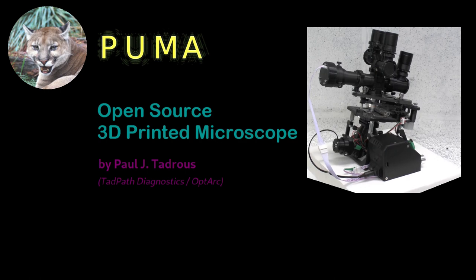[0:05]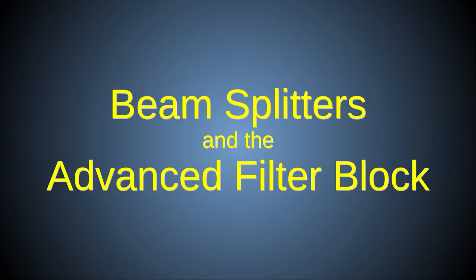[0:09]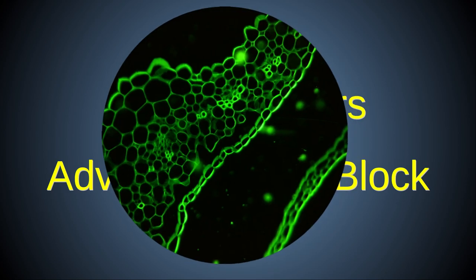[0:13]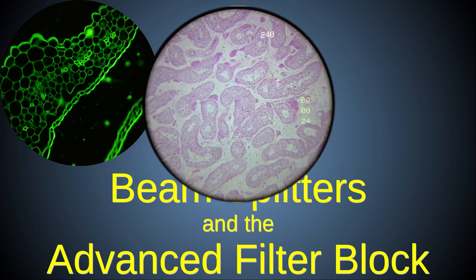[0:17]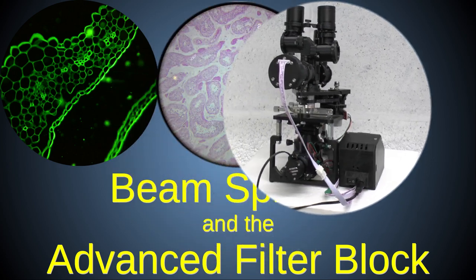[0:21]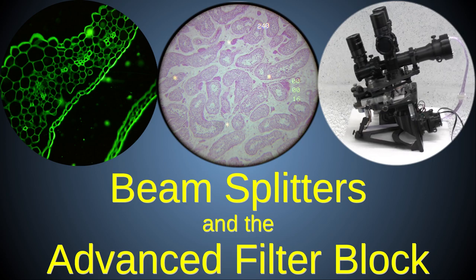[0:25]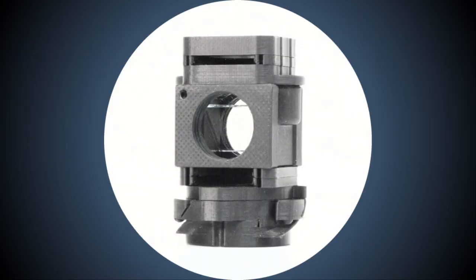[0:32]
Many of PUMA's advanced features, such as coaxial epi-illumination, augmented reality projection, and binocular and trinocular viewing, depend on optical beam splitters in the advanced filter block and binocular head modules. In this video, I'll discuss the beam splitter components of both those modules and show how to make the advanced filter block. A full discussion of the binocular head module will be the subject of a separate video.
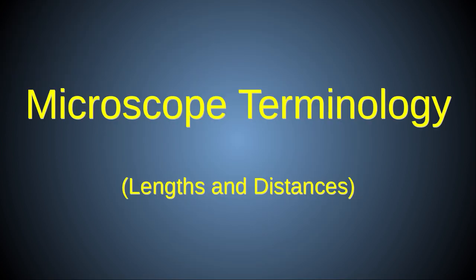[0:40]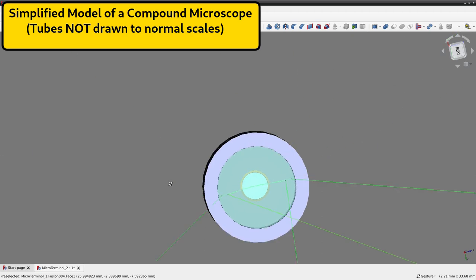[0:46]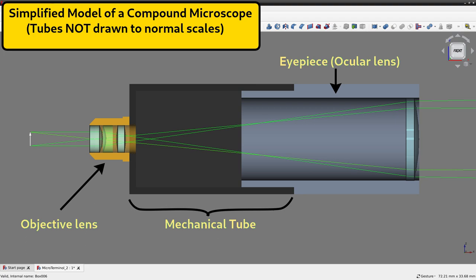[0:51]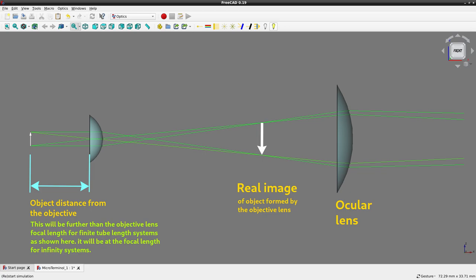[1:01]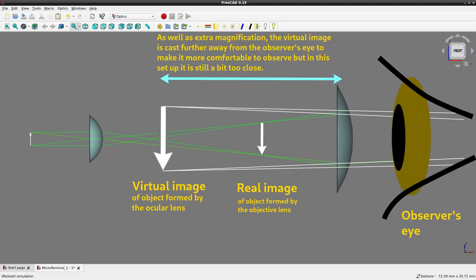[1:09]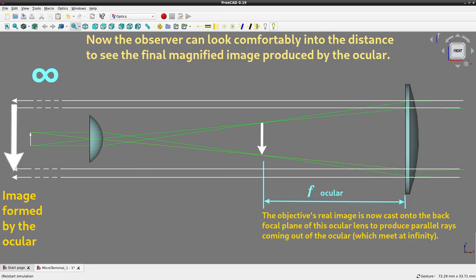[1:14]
First, I'll give you some context so you can understand how the PUMA filter blocks and ocular heads fit into the overall scheme of the microscope. A generic compound microscope takes a real image of a specimen, which is a certain distance close to an objective lens, and magnifies that image further with an ocular lens. By arranging it so that the real image from the objective falls onto the back focal plane of the ocular, you get a situation where you can look comfortably into the far distance through the ocular lens to see the magnified image of the specimen.
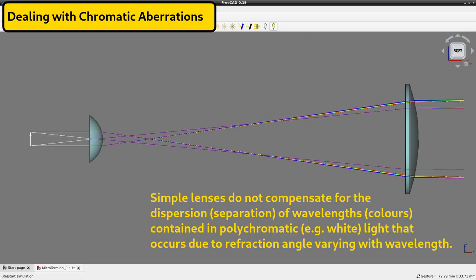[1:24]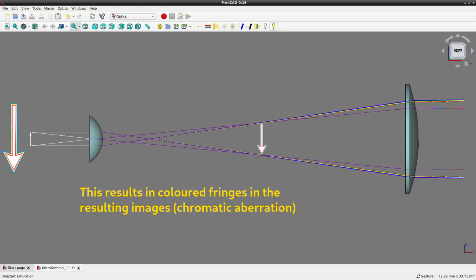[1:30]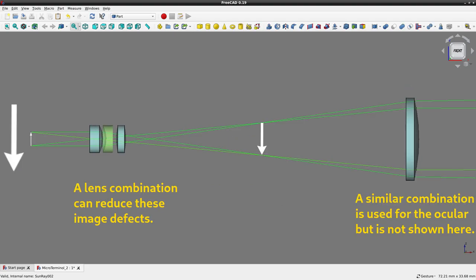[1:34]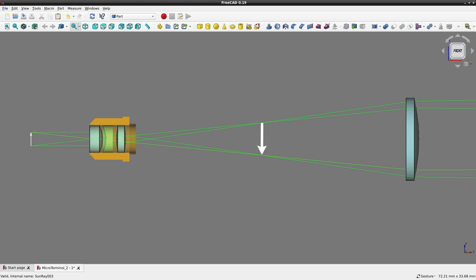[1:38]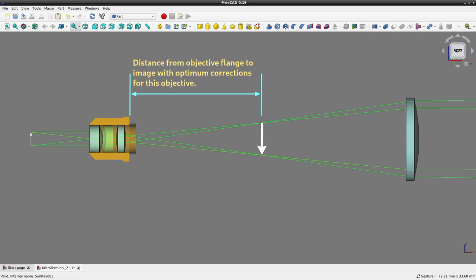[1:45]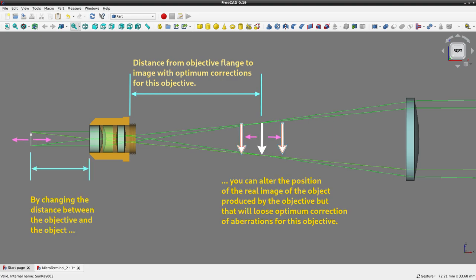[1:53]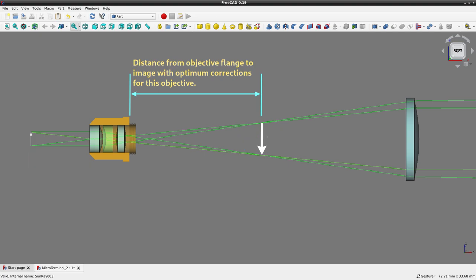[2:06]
Using a simple lens as objective results in chromatic and spherical aberrations of the image, so microscope objectives use lens combinations to reduce these aberrations to a minimum. However, these corrective effects only take place optimally when you focus the image at a certain distance away from the objective. You could focus the image further away or closer than this optimum distance by simply moving the specimen closer to or further from the objective, but then the image would lose those optimum aberration corrections. So, it is important that the image from each objective is focused only at the optimum distance it was designed for.
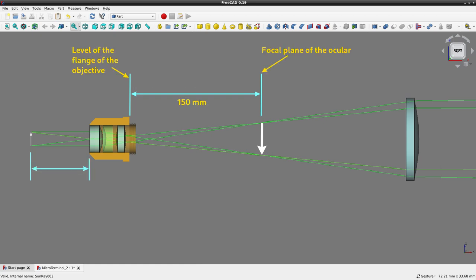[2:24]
Over the years, microscope manufacturers settled on certain standards for this optimum distance, and the most commonly used standard, until the uptake of infinity optics, which I'll discuss shortly, was 150 millimeters from the flange of the objective to the focal plane of the ocular. A notable exception to this were objectives made by Leitz, which were designed to give optimal corrections when the image is focused at 160 millimeters from the flange of the objective. This optimum distance is sometimes called the optical tube length.
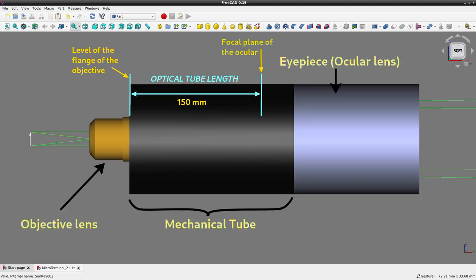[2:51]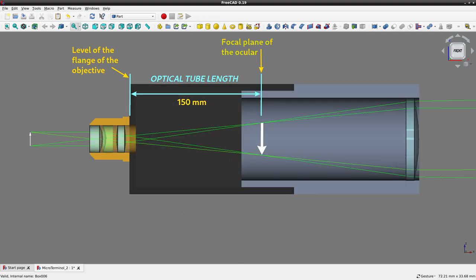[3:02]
The objective is rigidly held at this optimum distance from the eyepiece by the mechanical tube of the microscope, and for practical reasons, the length of this tube is measured from the flange of the objective to the flange of the ocular. This length of physical tubing is called the mechanical tube length of the microscope. Another standard adopted by microscope manufacturers is that there shall be exactly 10 millimeters from the flange of the ocular to the focal plane of the ocular inside the mechanical tube. Thus, the mechanical tube length is exactly 10 millimeters longer than the optical tube length.
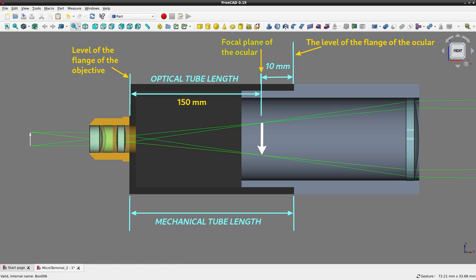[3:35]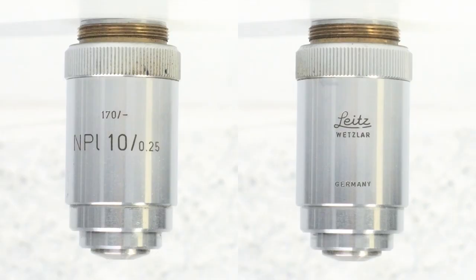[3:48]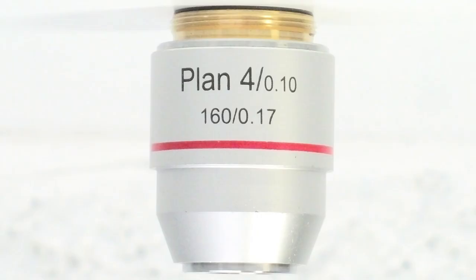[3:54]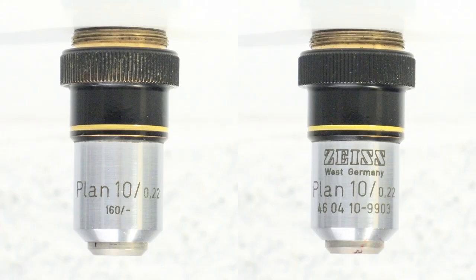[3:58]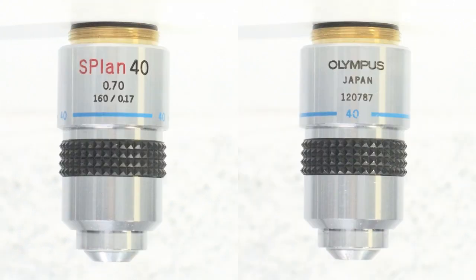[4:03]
This means that most non-infinity objectives should be used with a mechanical tube length of 160 millimeters, and this is the Royal Microscopical Society, or RMS, standard, although Leitz continued to use 170mm tubes for their objectives long after the RMS standard was adopted by other manufacturers. The mechanical tube length appropriate for any objective is printed on the barrel of the objective, as is shown here.
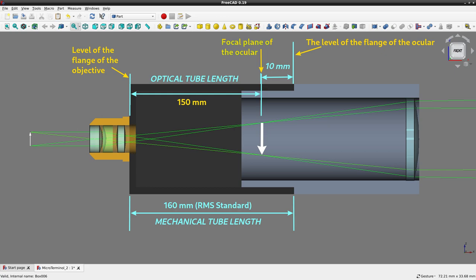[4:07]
Another standardized feature, which is not the same standard for all microscopes, is the parfocal distance, which is related to the conjugate focal distance of the objective. The conjugate focal distance is the distance between the focal plane of the specimen and the focal plane of the image of the specimen produced by the objective. To keep objectives parfocal, they are designed such that the distance from the flange of the objective to the specimen in focus is constant regardless of the magnification of the objective. For PUMA and many other professional microscopes, this distance is 45 millimeters.
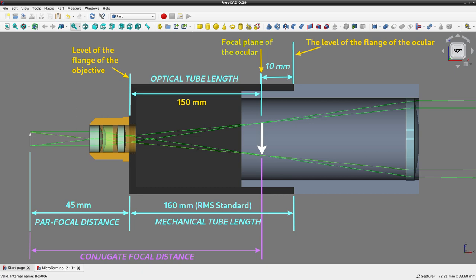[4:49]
So, when you add this 45mm to the 150mm from the objective flange to the focused image, you get a total of 195mm. So when you see objectives being described as 195 objectives, this is what it means. Some other objectives have a parfocal distance of 35 mm, so these are described as 185 objectives. These will not work with PUMA because there is not enough travel distance in the stage to move the specimen the extra 10 mm closer to the objective that will be required to get it in focus. One other distance term worth noting is the working distance of the objective, defined as the distance from the front lens element of the objective to the closest surface of the coverslip when the specimen is in focus.
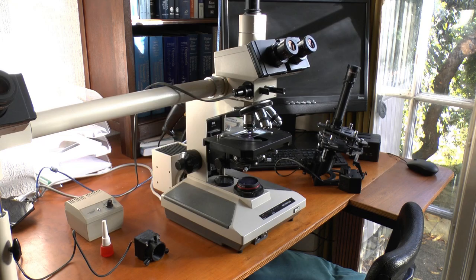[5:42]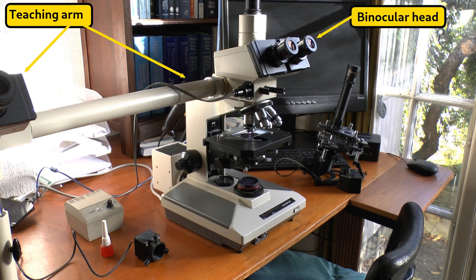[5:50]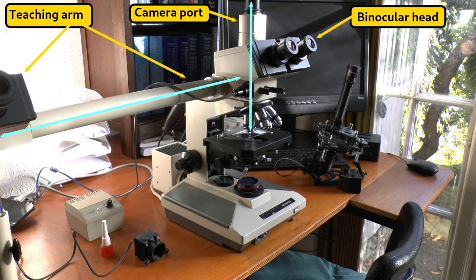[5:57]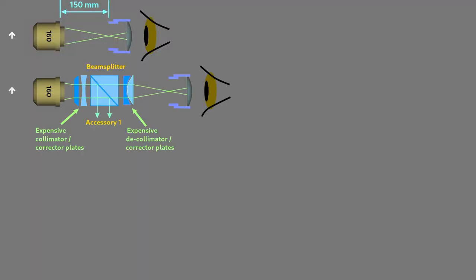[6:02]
As microscopes got more complex, they required additional accessories such as binocular heads, teaching arms, camera ports, epi-illumination prisms, etc. This made it necessary to extend the microscope tube length. So, expensive collimating and decollimating optics were needed for each accessory to lengthen the amount of optical path available before the image is brought to a focus. Collimation is also required to minimize the aberrations and ghost images introduced by the flat surfaces of prisms.
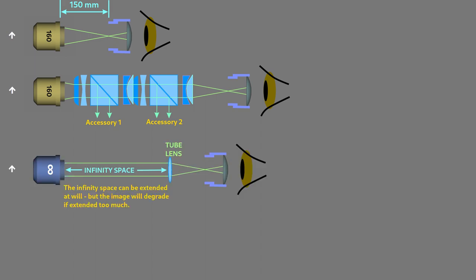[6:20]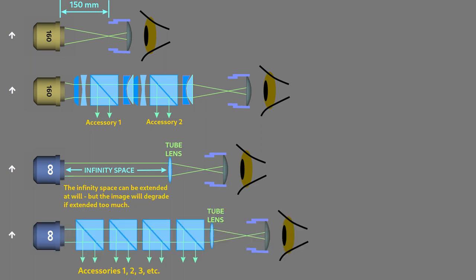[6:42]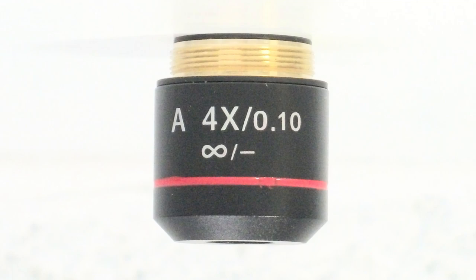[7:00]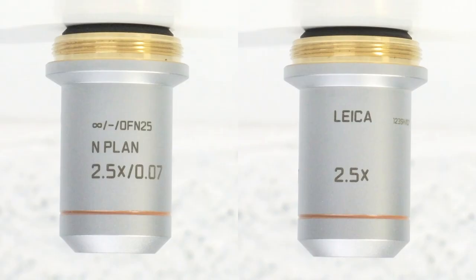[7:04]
Infinity-corrected objectives were developed to avoid these problems. With these objectives, with the specimen at the correct working distance from the objective, the image beam exiting the back of the objective is already collimated as a parallel beam, so it comes to a focus at infinity. This allows you to use any number of beam splitters in the parallel beam path for various accessories without needing a pair of collimating and decollimating lenses for each one. Only one final converging tube lens is required to focus the final image on the focal plane of the oculars. So, in these systems, the mechanical tube length is marked as infinity on the barrel of the objective.
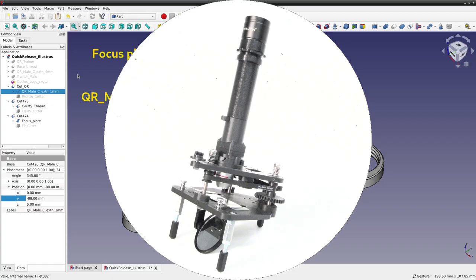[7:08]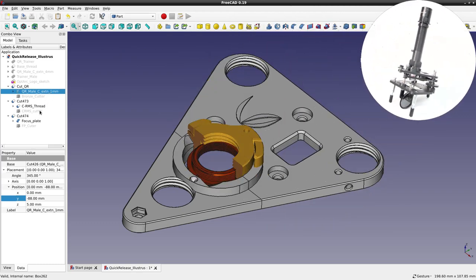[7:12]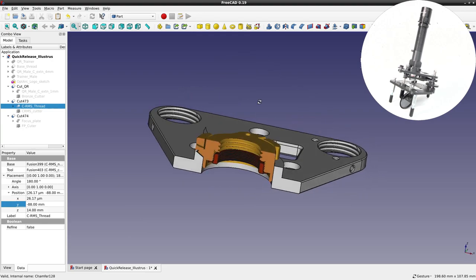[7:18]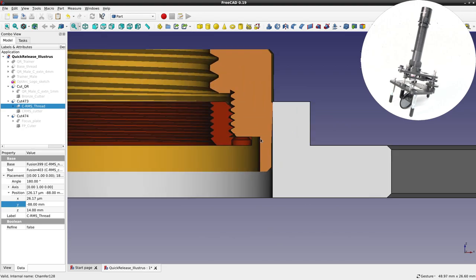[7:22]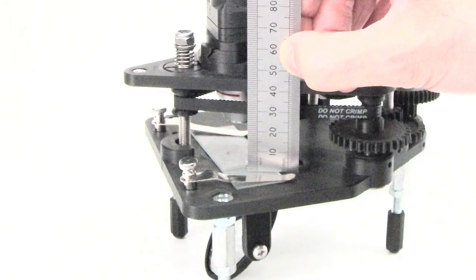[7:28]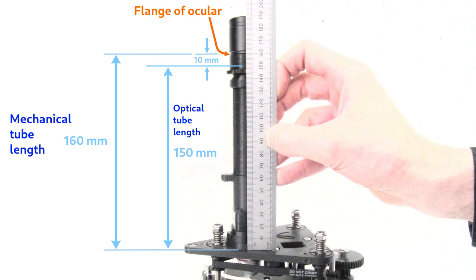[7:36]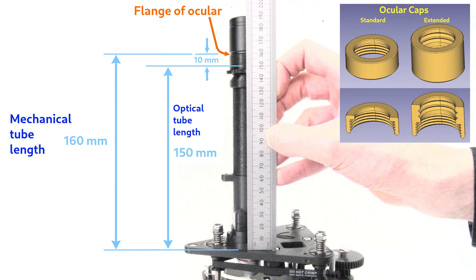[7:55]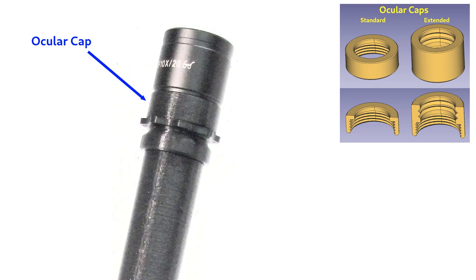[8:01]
This PUMA foundation scope illustrates how PUMA implements the various distances we have been discussing. With the standard 1 mm quick-release objective holder, the level of the flange of the objective is the top surface of the focus plate. So you can see that from here to the specimen is 45 mm of parfocal distance, and from here to 10 mm below the ocular flange is the 150 mm of optical tube length for the objective. The extra 10 mm to the ocular flange completing the 160 mm of RMS standard mechanical tube length. PUMA also has a 10 mm extra elongated ocular holder as an alternative to the standard ocular holder, which you can use if you are using Leitz objectives which need a 170 mm mechanical tube length.
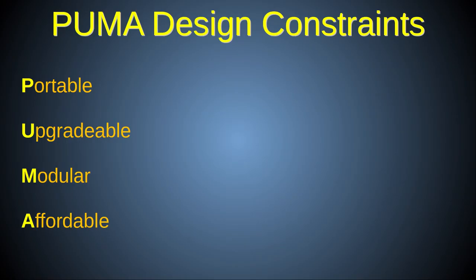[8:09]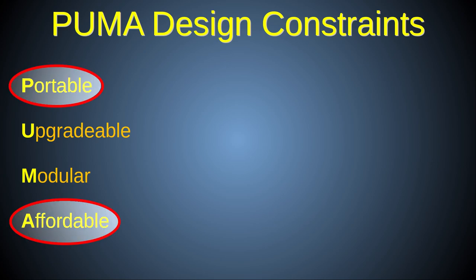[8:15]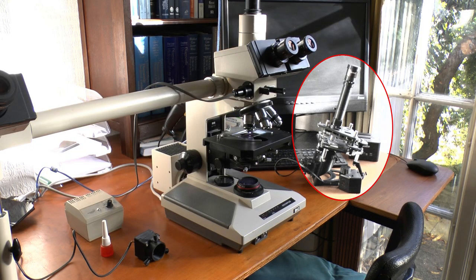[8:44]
Two important design constraints of PUMA are portability and affordability. These prohibit the use of collimating and decollimating lenses due to the fact that they would greatly increase the cost of production, be difficult for ordinary people to source, and would increase the size and weight of the scope. For these reasons, all of PUMA's advanced features, including the binocular head, were designed to fit into the literal 160 mm of focusing space behind the objective, to result in a very compact, economic and lightweight scope designed to use RMS standards.
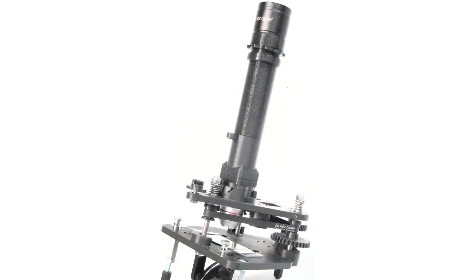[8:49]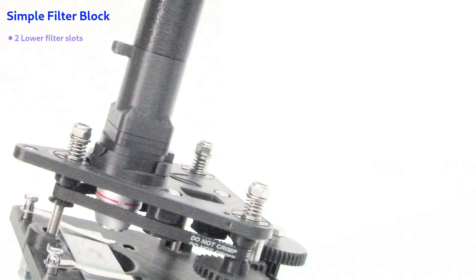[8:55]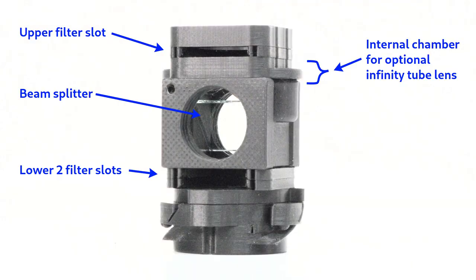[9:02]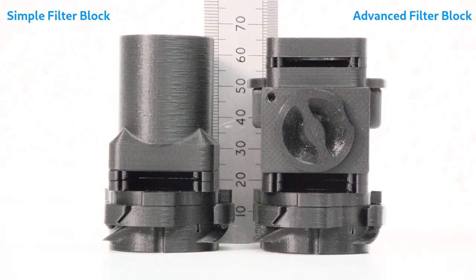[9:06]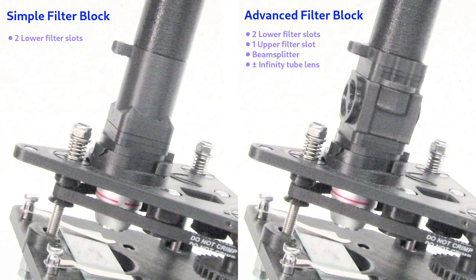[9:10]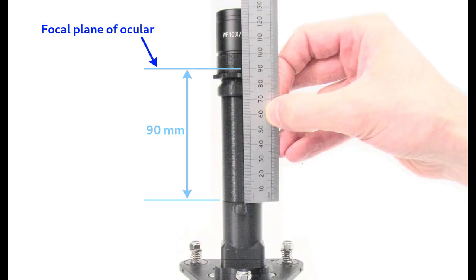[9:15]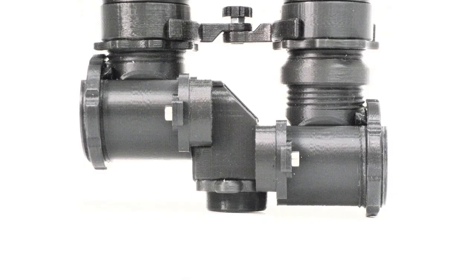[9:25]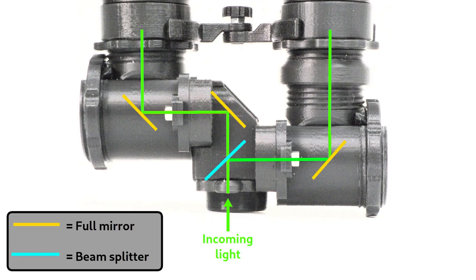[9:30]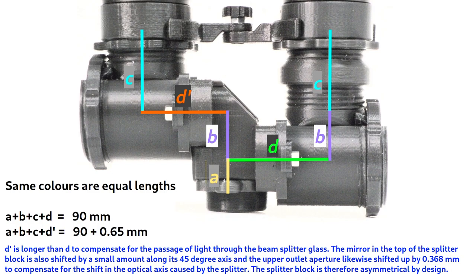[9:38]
Above the objective holder is the filter block, which may be simple with no internal optics, or advanced with an internal beam splitter and an optional tube lens for use with infinity-corrected objectives. Note that they are exactly the same height as each other, so are interchangeable depending on your needs. Above the filter block is the final 90 mm of objective focusing space. This 90 mm may be used by a straight optical path for the monocular head module you see here. Alternatively, the same 90 mm may be folded by a beam splitter and three mirrors into the adjustable binocular head shown here. This results in an even more compact scope. However, the use of beam splitters without collimation corrector lenses brings with it several compromises in optical quality, which will be introduced in the next section.
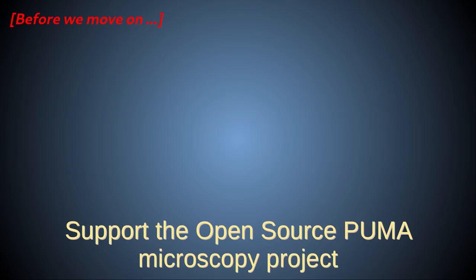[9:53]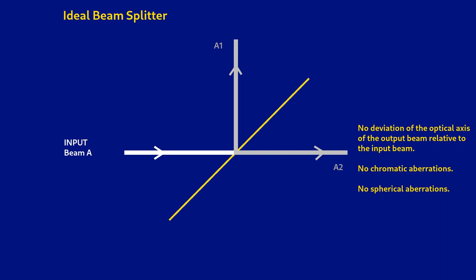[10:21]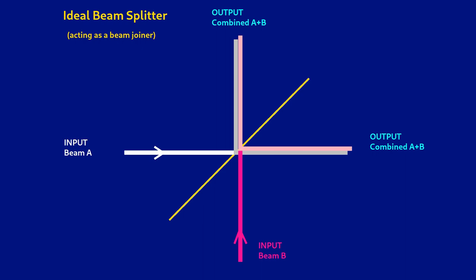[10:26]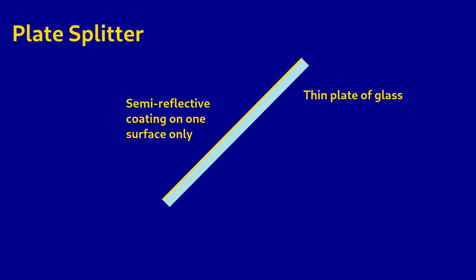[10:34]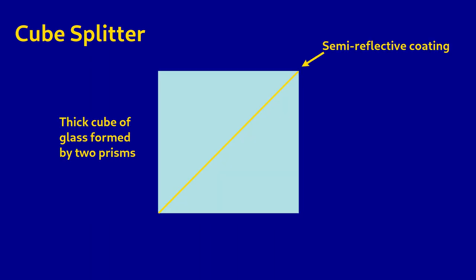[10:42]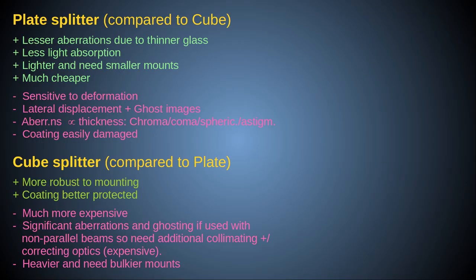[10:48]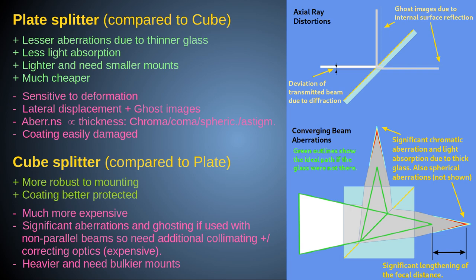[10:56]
There are several types of optical beam splitter, and each type can also be used as a beam joiner. The two types that were considered for use in PUMA are the splitter plate and the splitter prism cube. The beam splitter plate is a thin plate of glass coated with a semi-reflective coating on one side. A beam splitter cube is made of two prisms that sandwich a coating in between them. It is important to appreciate that there is no single best type of splitter for all applications. Each has its own advantages and limitations, as shown in this summary.
I decided to use the thin plate beam splitters for PUMA because they better satisfy the PUMA design constraints of affordability, being many times cheaper than the cubes, and portability, because they take much less space to mount and are lighter.
Also, PUMA uses converging rather than collimated imaging beams, and so would require expensive additional correction optics and longer tube lengths if cube splitters were used. This would greatly increase both expense and bulk. This does mean, on the other hand, that PUMA design and construction methods had to be carefully tailored to minimize the unwanted effects of the plate splitters.
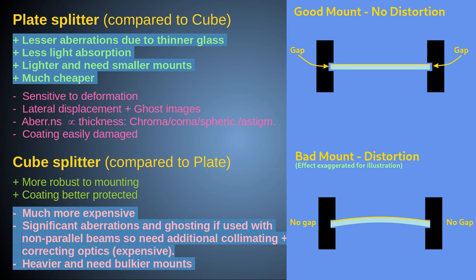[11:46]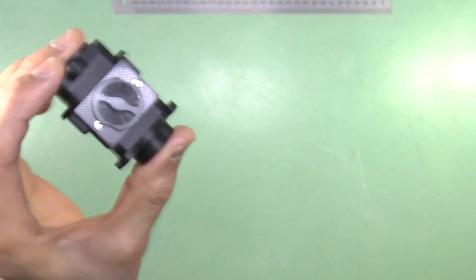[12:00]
For example, careful design of the mounts was needed to avoid putting pressure on the splitter plates, to avoid deformation of the glass, resulting in astigmatic aberrations. Listen to this. That is a good sound. It means that the splitter plate is free to rattle, and so no lateral pressure is being put on it. I'll discuss these important construction details later in the video.
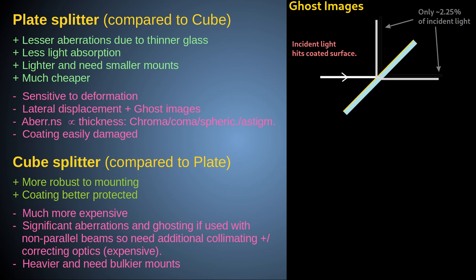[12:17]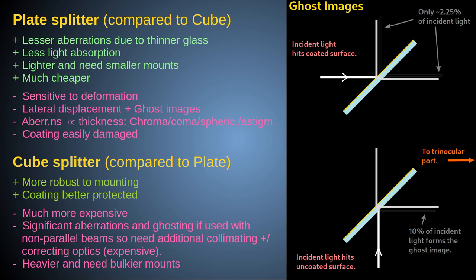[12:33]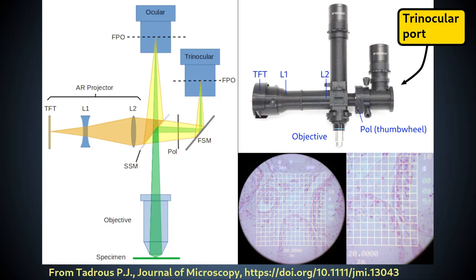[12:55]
The ghost image reflection of the plate splitters used in PUMA is very faint and is not noticeable in most normal bright field viewing conditions, but may sometimes be seen in some dark field settings, especially on the trinocular port, because that takes its image reflection after first hitting the plain glass surface of the beam splitter before reaching the coated semi-reflective surface. Again, PUMA's careful design and construction techniques were deliberately chosen to minimize this, and so it's important to follow the PUMA build instructions carefully to get the best quality image results. For example, the trinocular port is designed to only be used with a rotatable polarizer, which can help filter out some of the ghost image component.
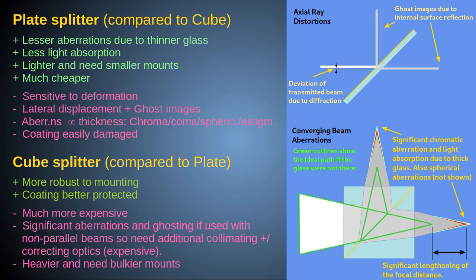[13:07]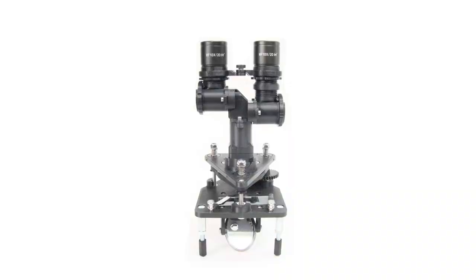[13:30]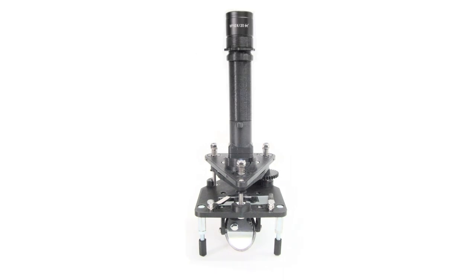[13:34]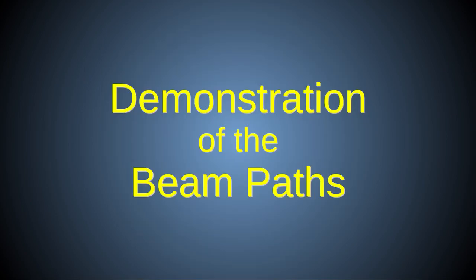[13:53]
Unfortunately, no affordable or practical optical correction has been found for PUMA to ameliorate the chromatic and spherical aberrations caused by light passing through the beam splitters. Although these effects are small for the thin plate splitters used in PUMA, they are noticeable, so it is always best practice to use the minimum number of beam splitters required for your application. For example, if you don't really need the binocular head, then don't use it. If you do need the extra filter slot provided by the advanced filter block, but have no intention of using the augmented reality heads-up display or epi-illumination or trinocular features, then don't add the beam splitter when constructing the advanced filter block.
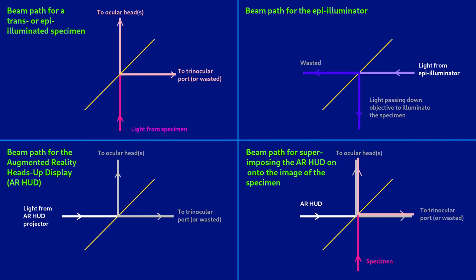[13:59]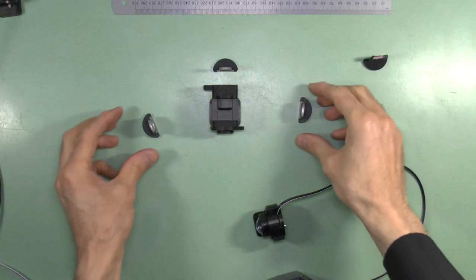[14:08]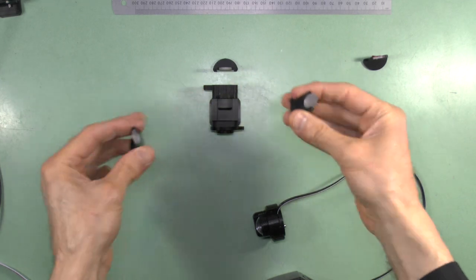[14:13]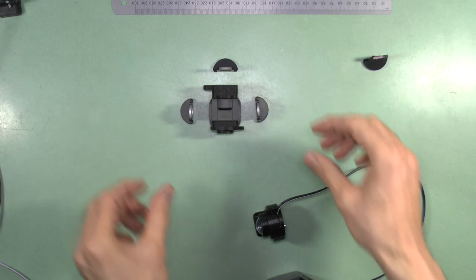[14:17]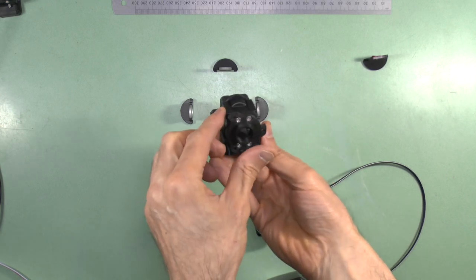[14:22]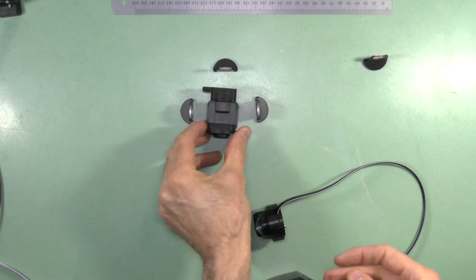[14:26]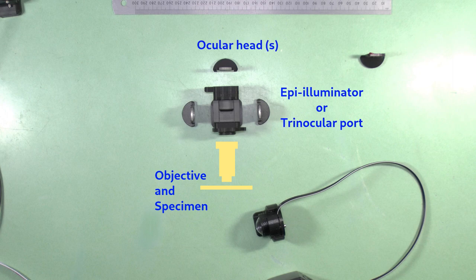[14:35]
Here is a simplistic diagram of the beam path for the advanced filter block. To demonstrate the beam splitter effects in practice, I'll be using these metal-coated, semi-frosted glass discs as light beam detectors. They will illuminate when the light beam enters them. Here is the advanced filter block with its beam splitter in situ. The objective lens and specimen will be down here, and the ocular head up here. This would be the side of the epi-illuminator or trinocular camera port, depending on which configuration you have set up. And this will be where the light from the augmented reality heads-up display projector will come in. The coated surface of the beam splitter is facing the augmented reality heads-up display port, because this needs to direct a high-quality image of the augmented reality heads-up display up to the ocular head.
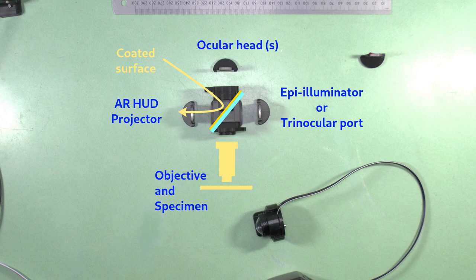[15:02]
The non-coated surface of the splitter faces the epi-illumination port, because it does not matter if we get a ghost image of the uniform illumination beam due to reflections of the uncoated surface, because this beam is directed down to the sample to illuminate it. This shows why it is important to orientate the beam splitter correctly, as will be discussed later. However, if you have no intention of using the heads-up display, then it would be better to insert the beam splitter with the coated surface facing the trinocular port, so you can get a higher quality image from there.
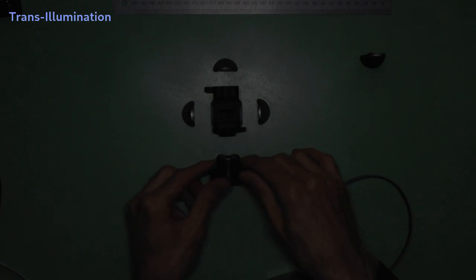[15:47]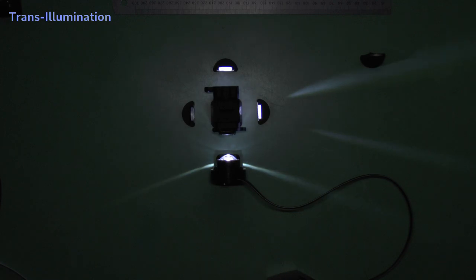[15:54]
In this configuration, I have the light source at the bottom, simulating transillumination microscopy. When I switch on the lamp, you can see how the beam splitter splits the light from the transilluminated specimen 50-50 between the main ocular head and the trinocular camera port. The port of the augmented reality heads-up display is not illuminated other than by light passively reflected from any object in the opposite arm of the beam path.
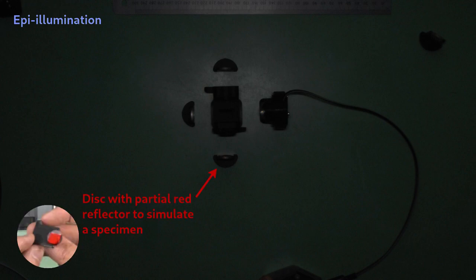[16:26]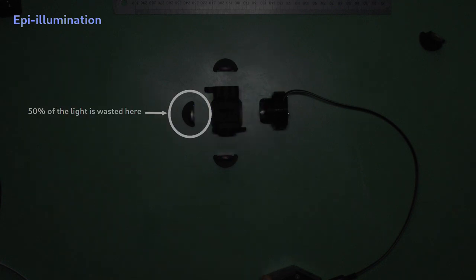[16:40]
Now I've put the light source in the epi-illumination position, where the trinocular camera port was previously. I have also put a reflecting disc in the position of the specimen with a red filter on it to simulate light reflecting from an epi-illuminated specimen. This time, when I switch on the lamp, light reflects 50-50 at the beam splitter, with half of it going to waste by illuminating the augmented reality heads-up display port, and half of it directed downwards to the red reflective specimen. And you can just make out a faint red signal in the ocular detector, which is the light reflecting
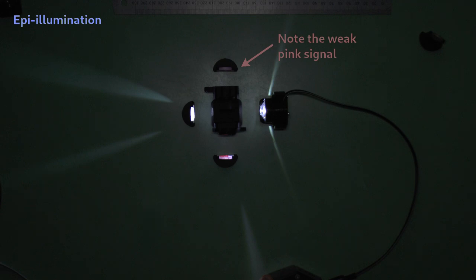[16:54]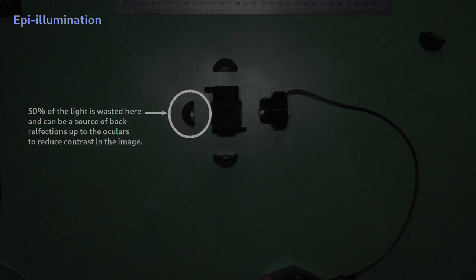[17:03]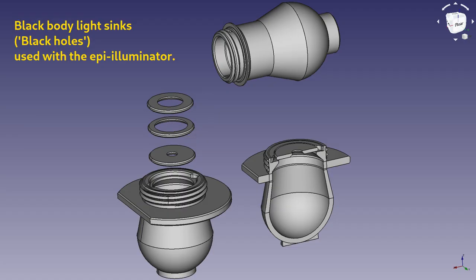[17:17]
up from the specimen, only 50% of which gets through the beam splitter, hence the very weak signal. Regarding the large amount of light going across to the augmented reality heads-up display port, this light can reflect back onto the beam splitter, and 50% of that back reflected light will be reflected up to the ocular head to dilute the signal from the specimen. It is for this reason that special light sinks must be used when doing epi-illumination, and more will be said about those in a separate video on epi-illumination.
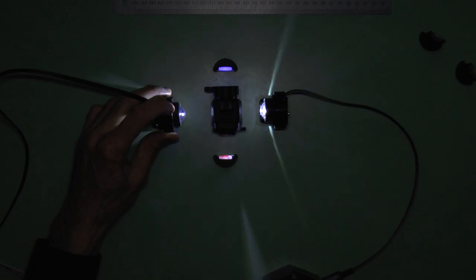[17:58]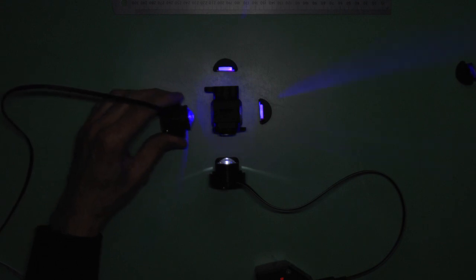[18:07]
Now, if I replace this light detector in the augmented reality heads-up display port with another light source, a blue light, the blue light representing the light coming from the augmented reality heads-up display projector, you can see that the blue light beam is reflected up to the ocular, where it merges with the image of the light coming from the objective. This is the same whether using epi-illumination, as shown here, or in the transilluminated configuration, as shown here. In this transillumination setup, note how the signal from the augmented reality heads-up display and the objective are simultaneously present at both the standard ocular port on top and the trinocular port on the side.
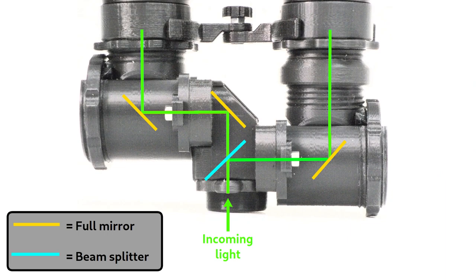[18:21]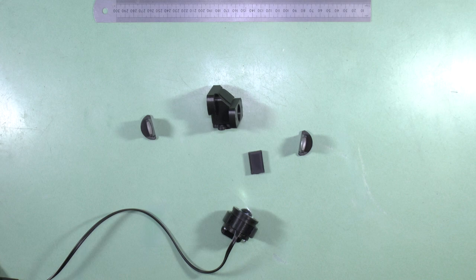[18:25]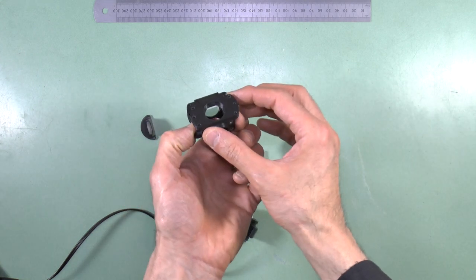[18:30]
I'll now demonstrate the beam splitter for the binocular head using the same apparatus. Note how, when I turn on the light, the beam gets divided equally between the upper and lower output ports. So now that you have learned about the beam splitter systems and seen them in action, I'll show you how to build them.
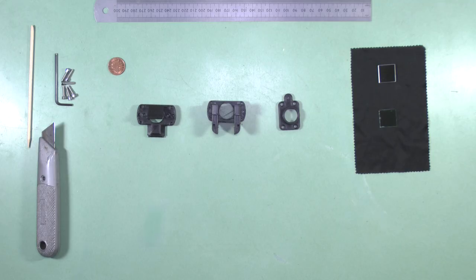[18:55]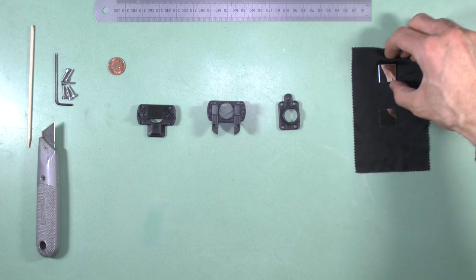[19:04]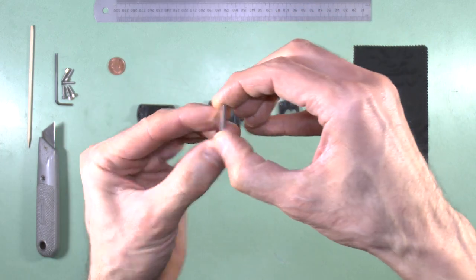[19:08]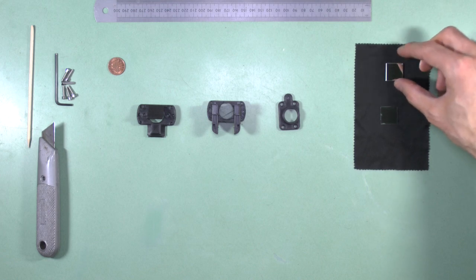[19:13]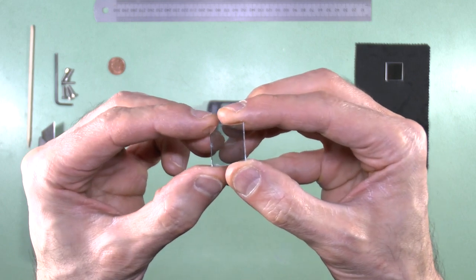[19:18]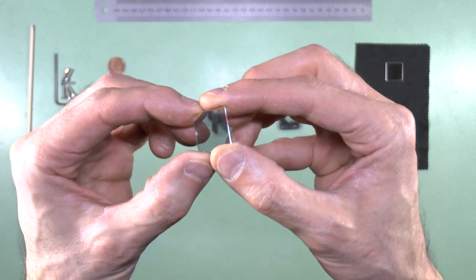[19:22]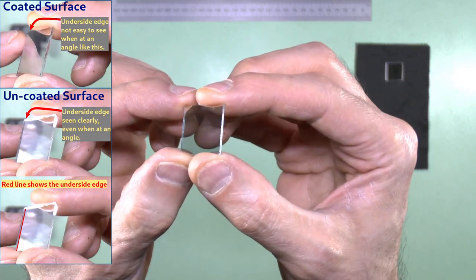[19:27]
These are the parts and the tools you'll need to build the beam splitter for the binocular head module. There are two optics. One is a fully silvered mirror, which is a first surface mirror, and the other is your semi-silvered plate beam splitter. And it's important with this to identify which surface has the semi-silvered coating and which surface doesn't. And you can do this by looking at the reflection,
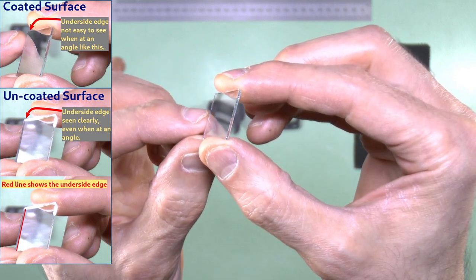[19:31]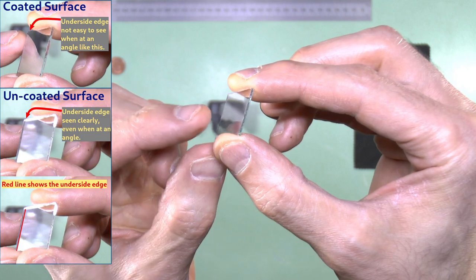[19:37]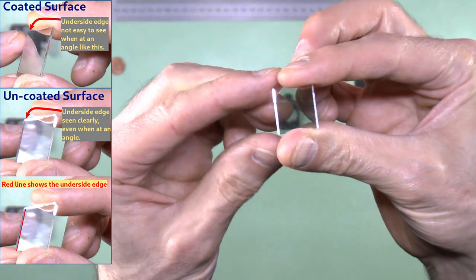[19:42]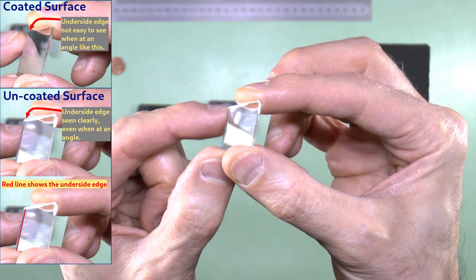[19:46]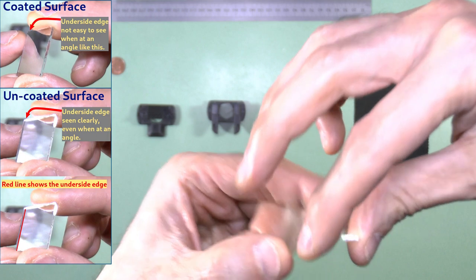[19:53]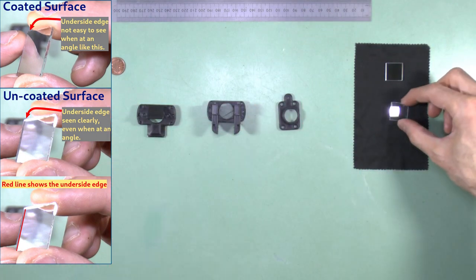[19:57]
and the surface that has the coating makes it difficult to see the underside edge. So this is the surface with the coating. If we look at the other side, and we look at a reflection, you can see the under surface edge very clearly, despite the reflection. So this is the uncoated surface. So we need to identify the coated surface, because that has to go a specific way in the beam splitter.
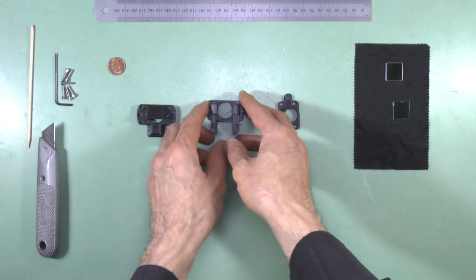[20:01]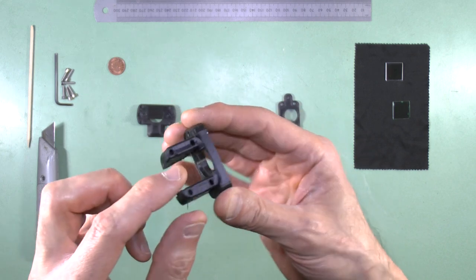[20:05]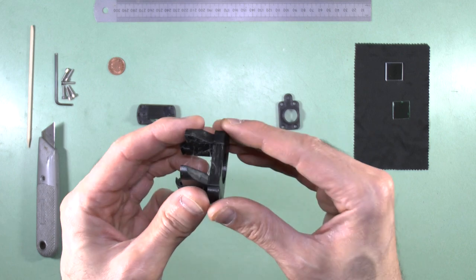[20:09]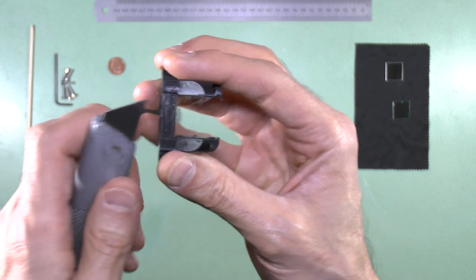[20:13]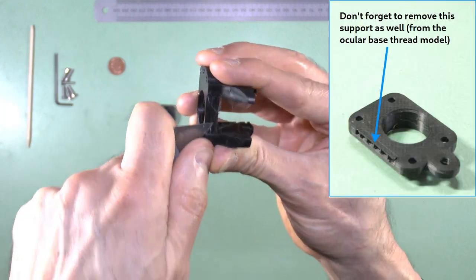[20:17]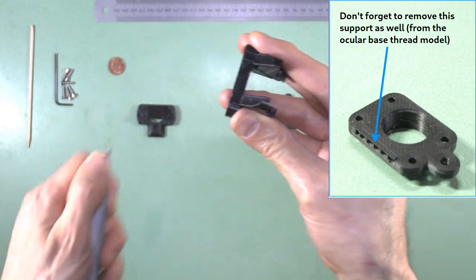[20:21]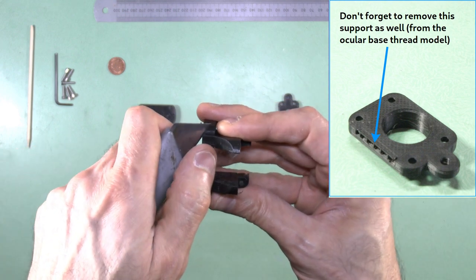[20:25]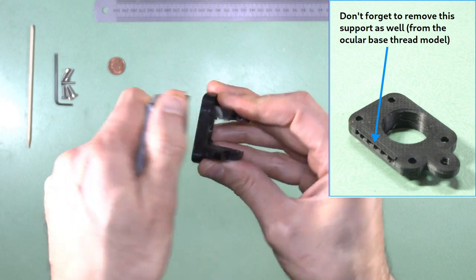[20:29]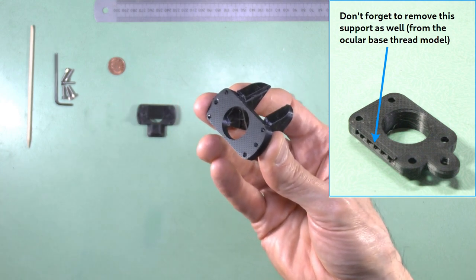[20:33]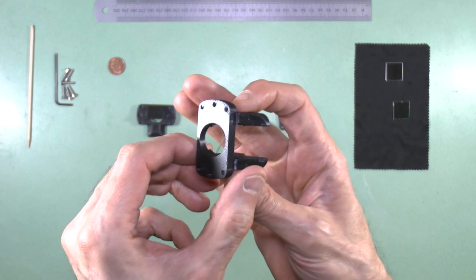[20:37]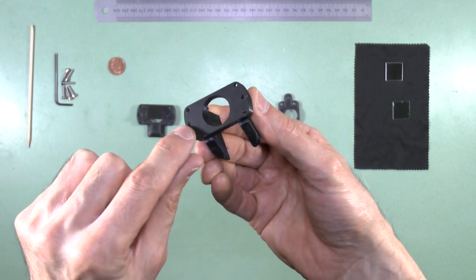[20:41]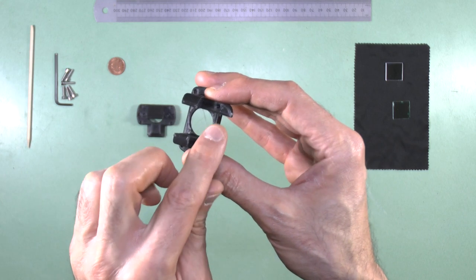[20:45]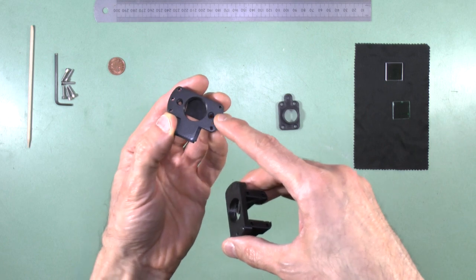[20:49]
The first thing to do, as always, is to clear the print of any stray plastic threads and remove any supports and other non-printed components. So in here, we'll need to remove this. For example, and this. Also, it's a good idea to thread all the holes before we put the beam splitter together. So these three here, these four, and these two. And on the other component, the same three holes there.
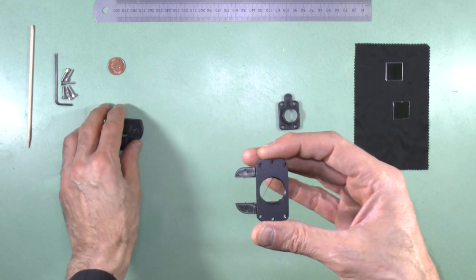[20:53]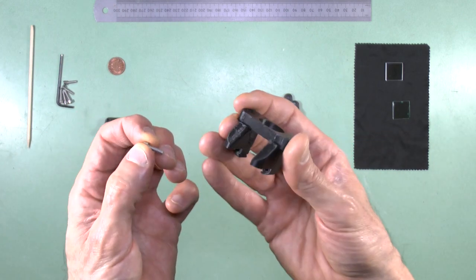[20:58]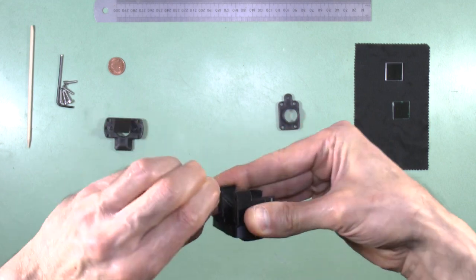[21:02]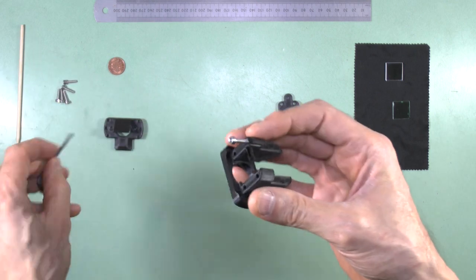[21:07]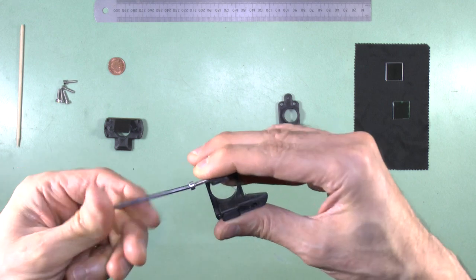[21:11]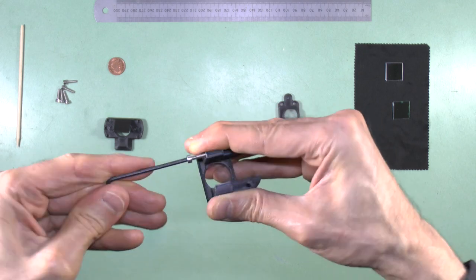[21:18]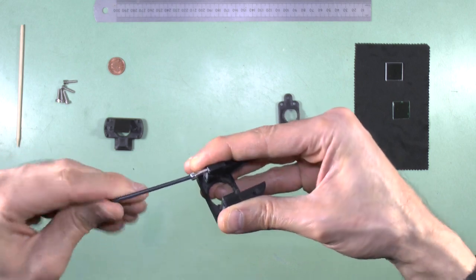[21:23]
So I'll do that first by threading them with a M3 screw, carefully and slowly threading them in. And after this is complete, and after I've removed all the threads and cleaned up the prints, we'll go on to see how to insert the optics and complete the assembly.
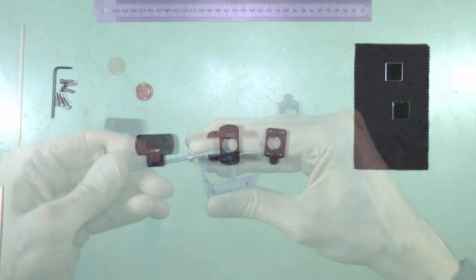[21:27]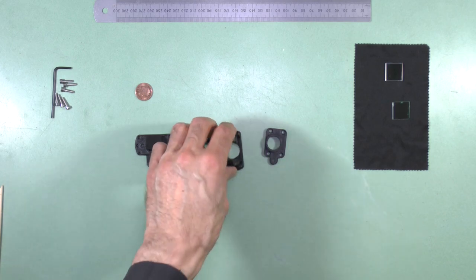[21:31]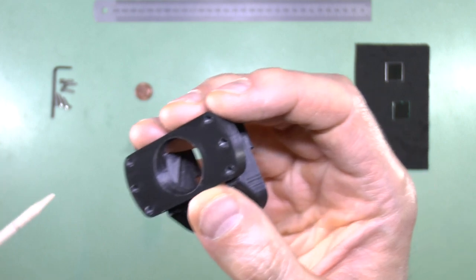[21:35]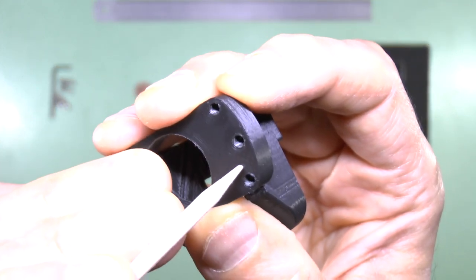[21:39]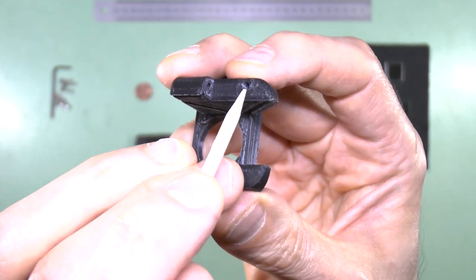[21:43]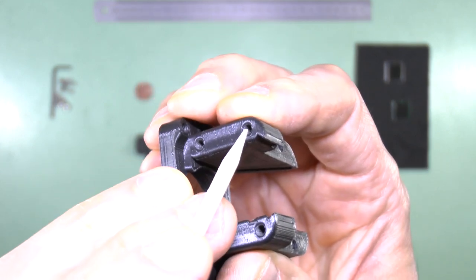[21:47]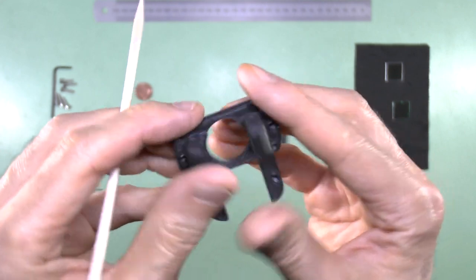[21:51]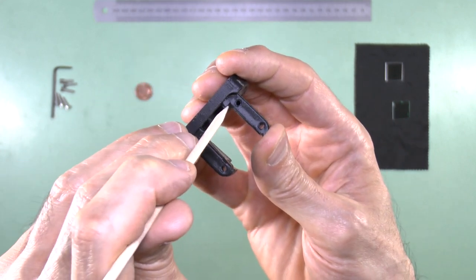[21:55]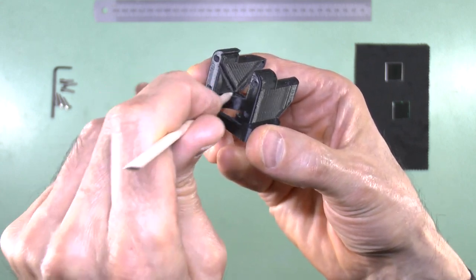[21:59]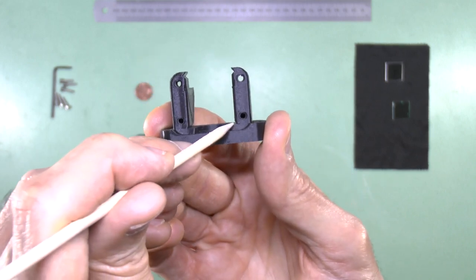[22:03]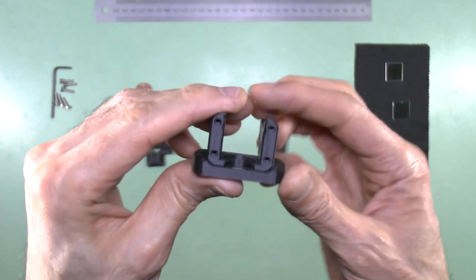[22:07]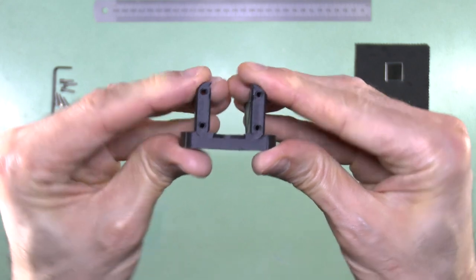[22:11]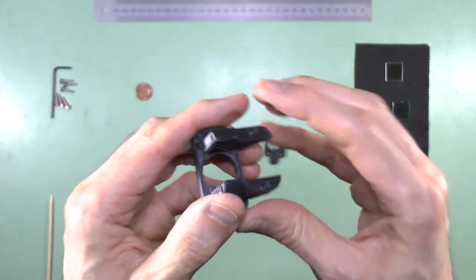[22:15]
Okay, so I've threaded all the holes and I've cleaned up the part. And you can see the threads here, for example, and in these holes here, for example, and all of these four holes down here. Now, one thing I want to point out is this groove that we have running along the inside here. So you notice there's a groove here and that goes all the way down inside, and on the other side as well, there's a groove that begins here and goes all the way down. And that's to give these side parts a hinge-like spring action, so we can open them out a bit and push them in. And that's important when we come to fit the optics.
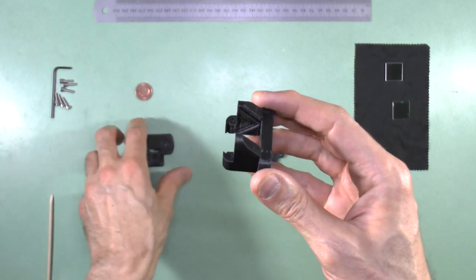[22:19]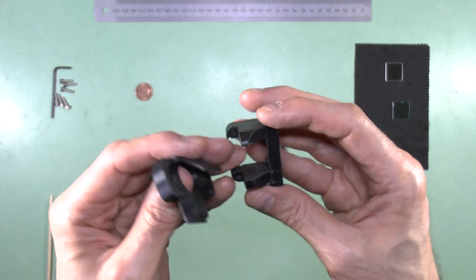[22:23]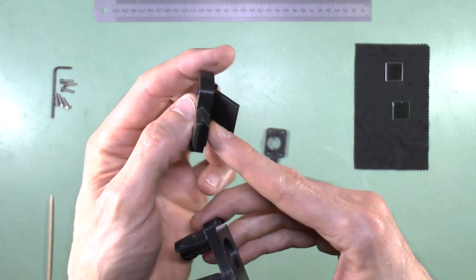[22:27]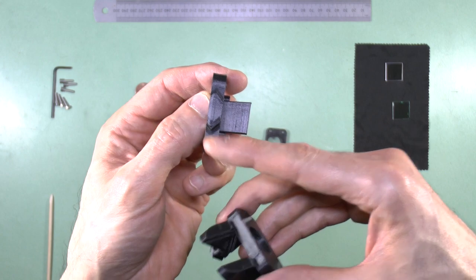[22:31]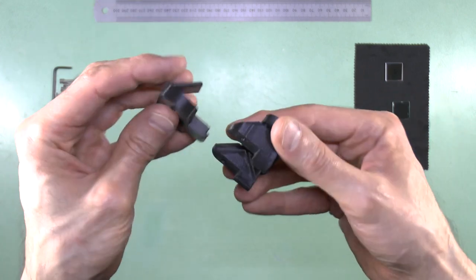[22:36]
But before we do that, I'll show you how this part fits together. So this is the backing plate and the top cover, light cover. And this fits on, slides on with these two sharp edges here going into these two grooves here, and it slides on like so.
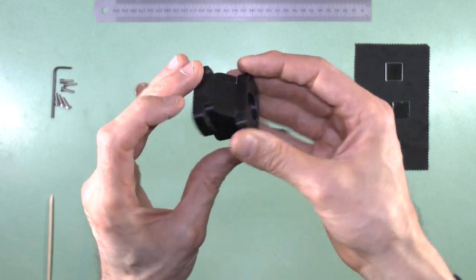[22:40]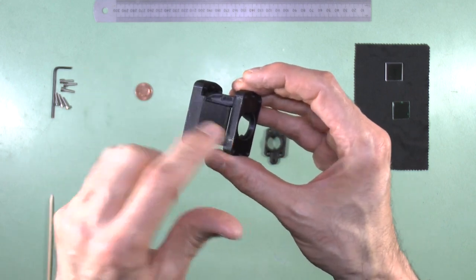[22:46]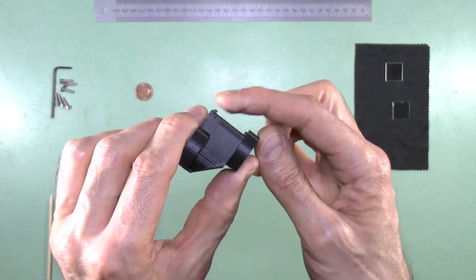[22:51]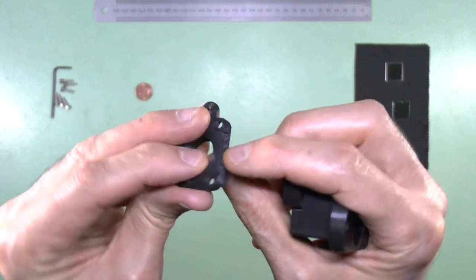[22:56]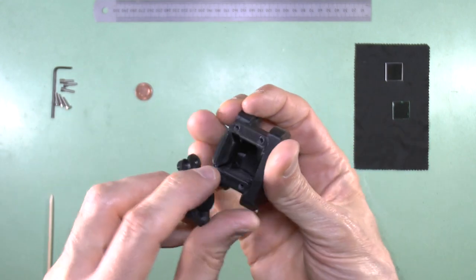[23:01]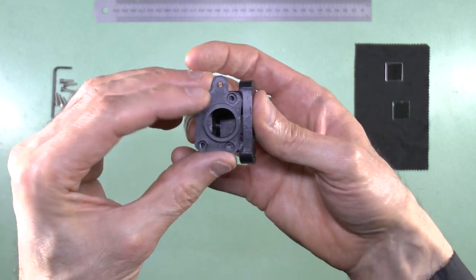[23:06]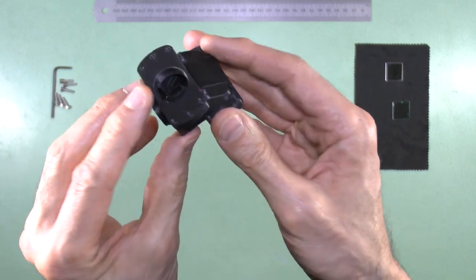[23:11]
Okay, now that's not completely light tight at the back here around these edges, but if you wanted to, you could seal those with black tack or something like that. Now at the bottom, you'll notice we have a raised ridge, and that raised ridge is to accept this cut out part of the base. Okay, and so this fits on like so. And so the whole thing fits together with screws, as I'll show you in a moment.
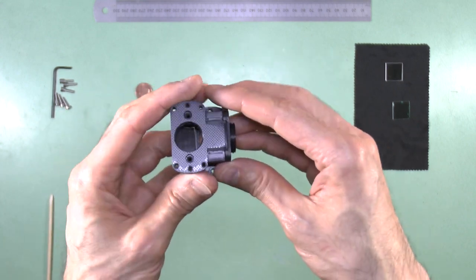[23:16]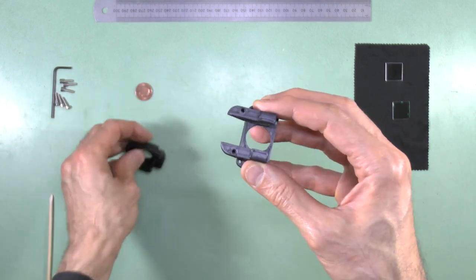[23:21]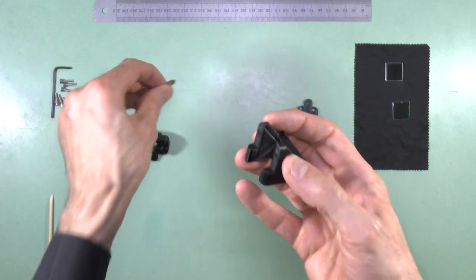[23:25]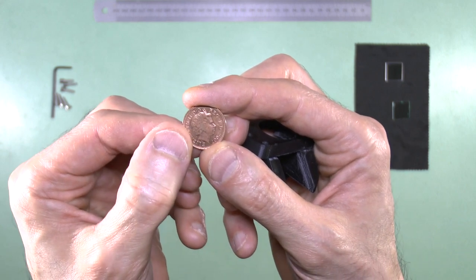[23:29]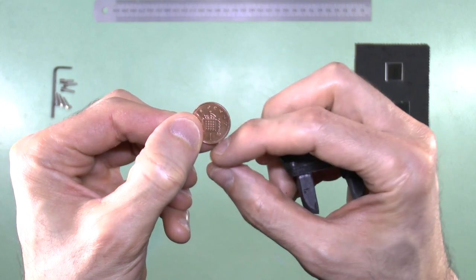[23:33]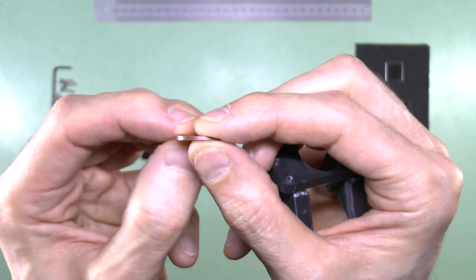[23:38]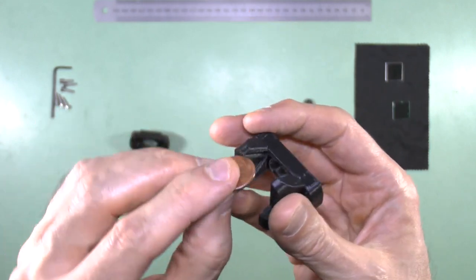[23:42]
But first, we will apply the optics. And to do that, we'll first apply the mirror. We'll need to separate the edges. So I use this, which is a penny coin. And I use this because it's exactly 2 centimeters in diameter and it has a smooth surface to it, so it's easy to insert. So what we need to do is insert that into here.
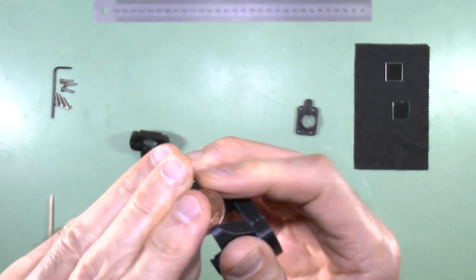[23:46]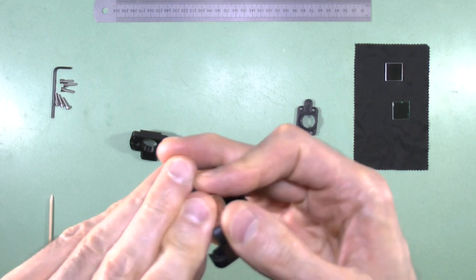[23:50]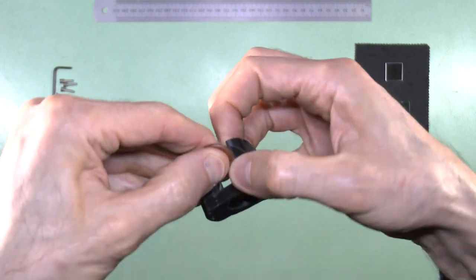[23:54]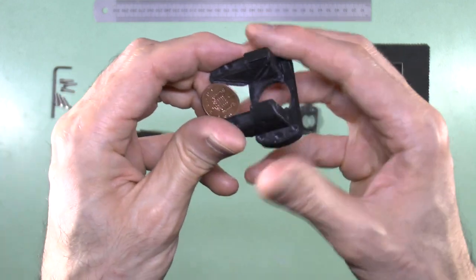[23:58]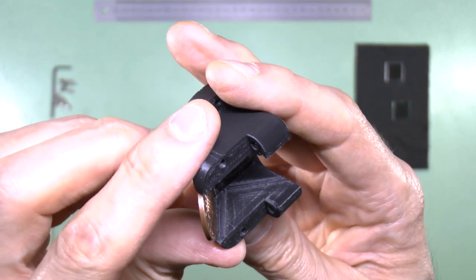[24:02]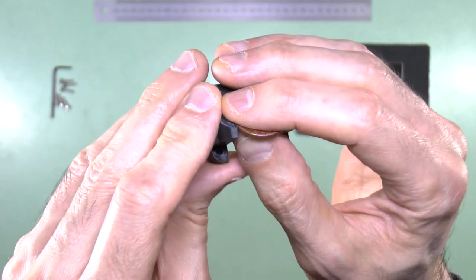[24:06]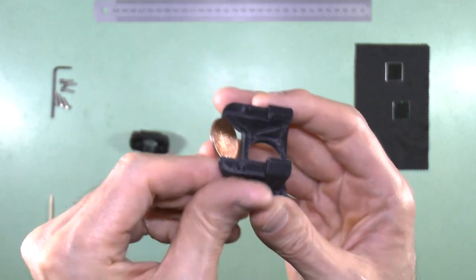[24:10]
And we need to adjust it so that it's right on the edge. This is a bit fiddly. There we are. So now, if I bring that close to the camera, you see that the penny is off the ridge, but it's holding these things apart. And now we can insert the mirror.
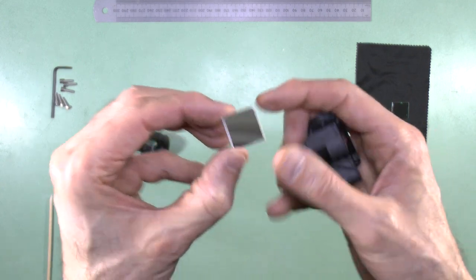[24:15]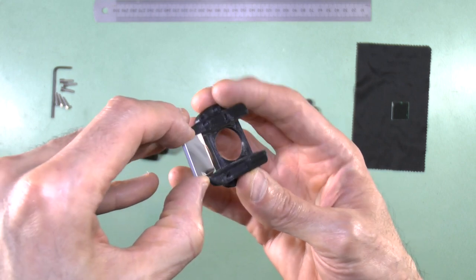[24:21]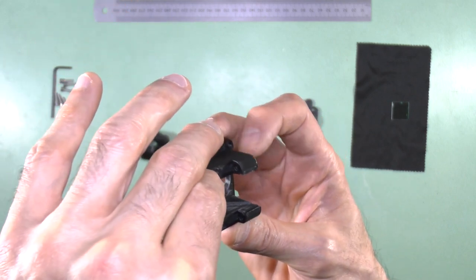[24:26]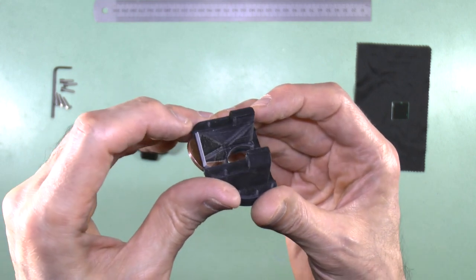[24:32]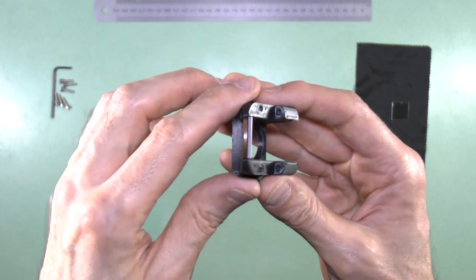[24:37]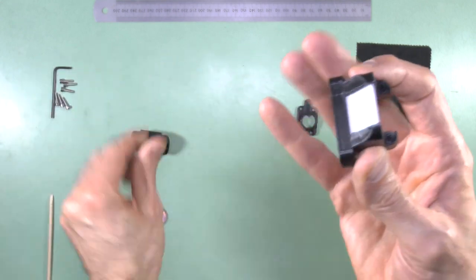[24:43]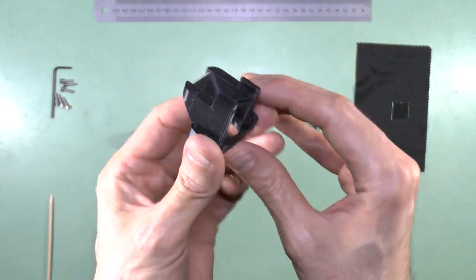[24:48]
So here we have the mirror. And that goes with its surface facing downwards into this groove like so. So hold it vertically and insert it into the groove. And once it's in the groove, all the way down, there we are. So once it's in the groove like that, you can take off the penny. And that is now held in place in its groove. Check that it's in the groove, like so.
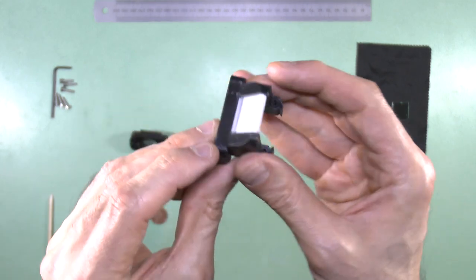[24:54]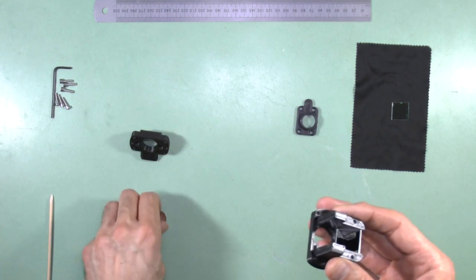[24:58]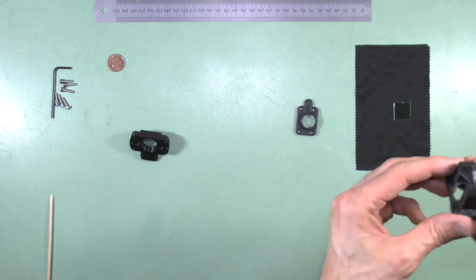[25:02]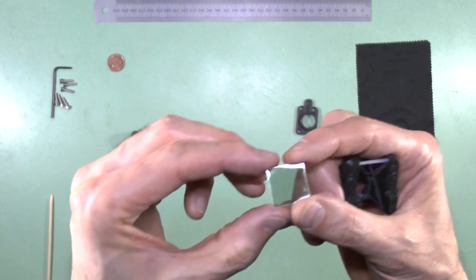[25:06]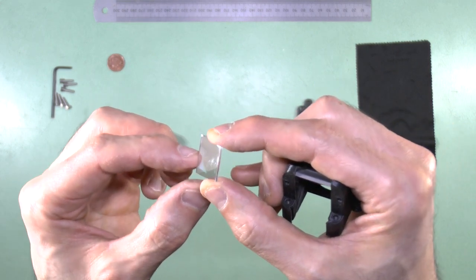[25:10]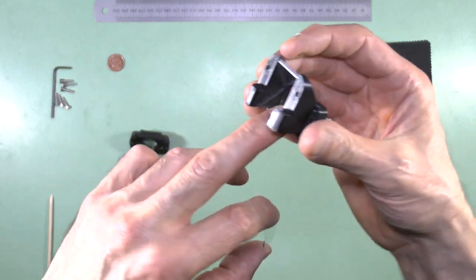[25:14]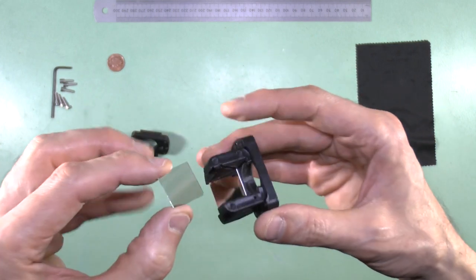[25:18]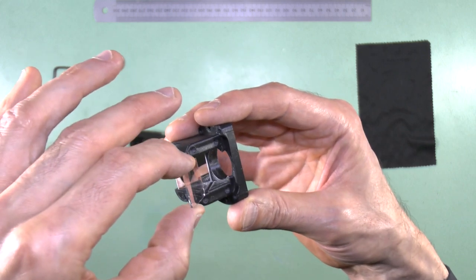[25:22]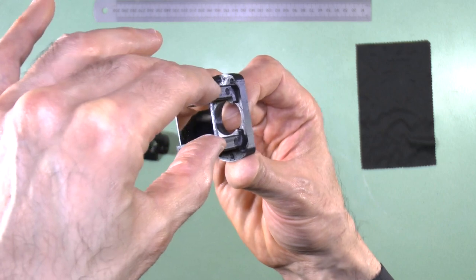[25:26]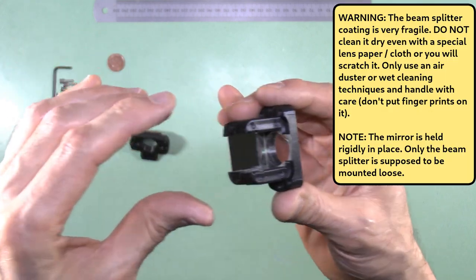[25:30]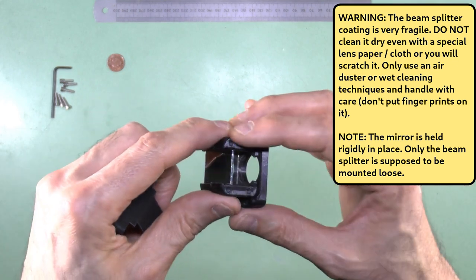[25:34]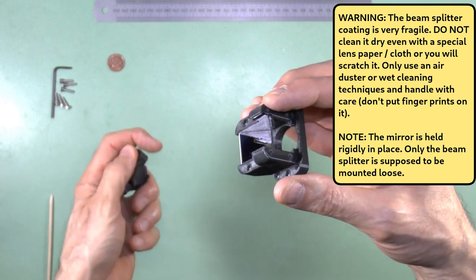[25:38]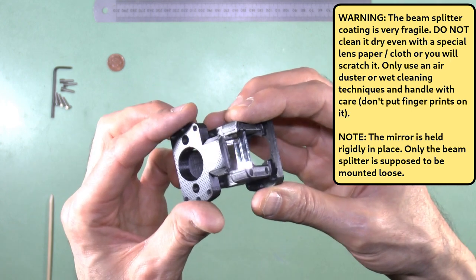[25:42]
And now we turn our attention to the semi-silvered mirror. Now, it's important with the semi-silvered mirror that you identify the coated surface, and the coated surface must face the outlet. Okay, so the coated surface must point outwards, and that just slots in here, and it should be a nice loose fit. Let's put my finger there to stop it falling out. Hold it vertically, and it goes in there like that. Okay, and now, careful not to turn it the other way around until we've inserted the coverings, otherwise it will fall out. So now, we will put the backing on,
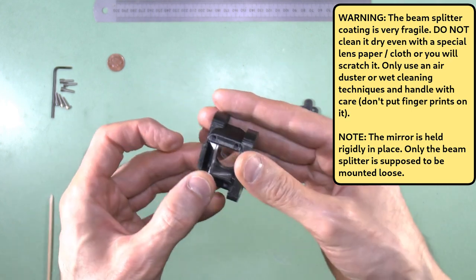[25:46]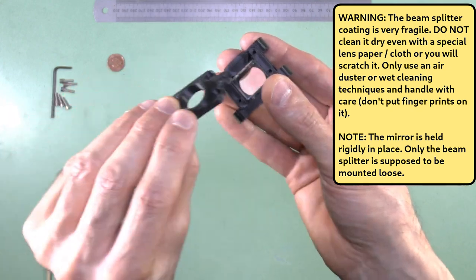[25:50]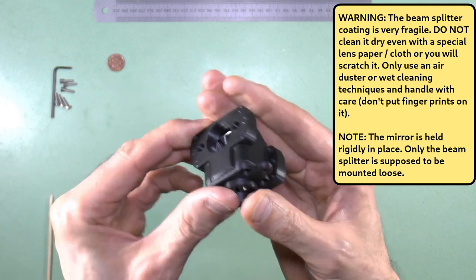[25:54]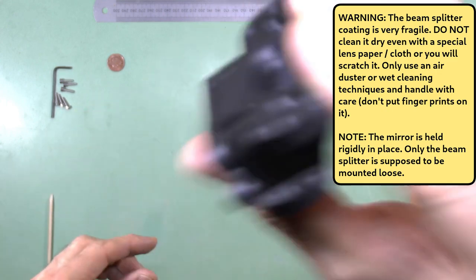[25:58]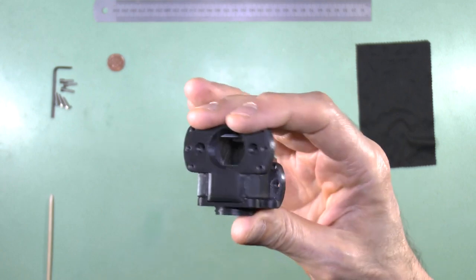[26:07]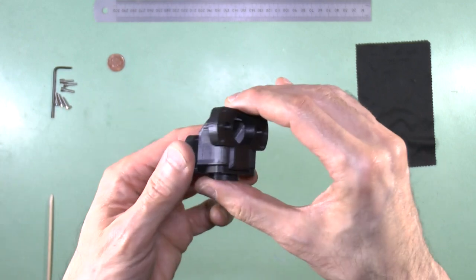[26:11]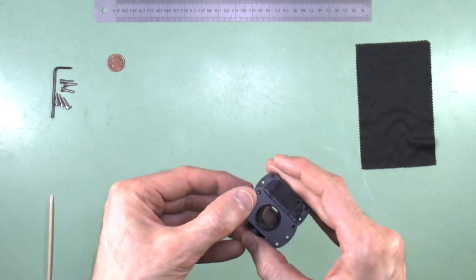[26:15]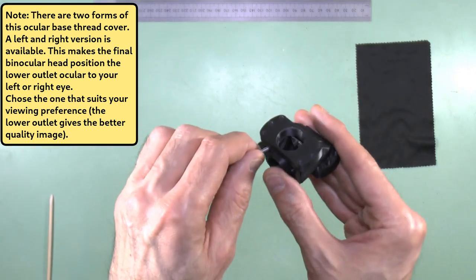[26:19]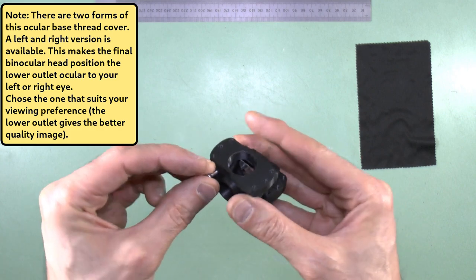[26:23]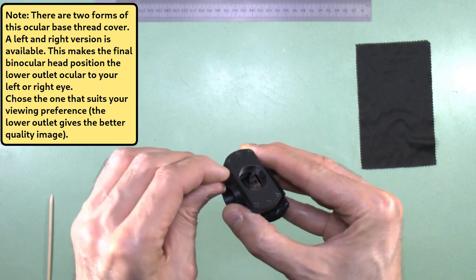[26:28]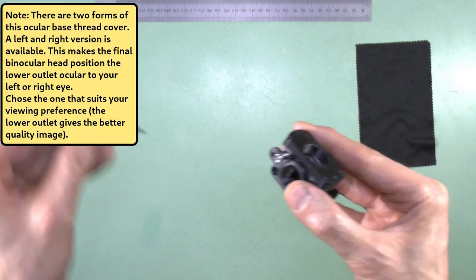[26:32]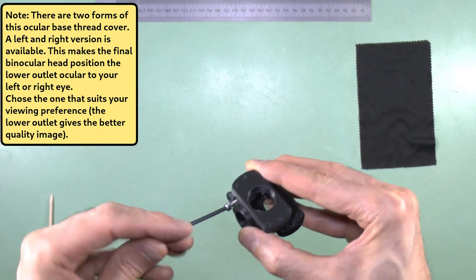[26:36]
and then the cover. And if this has worked well, it should rattle. Hear that? That's a good sound. So now your beam splitter is assembled. We need to just insert the screws to complete the assembly. And it's important to hear that rattling sound, because you do not want the beam splitter to be held rigidly in place, otherwise it will result in deformations and astigmatism.
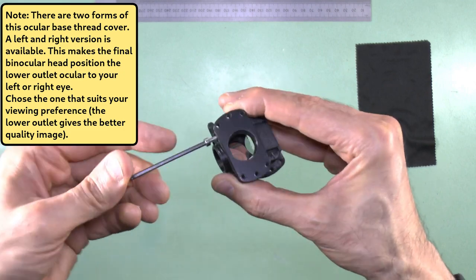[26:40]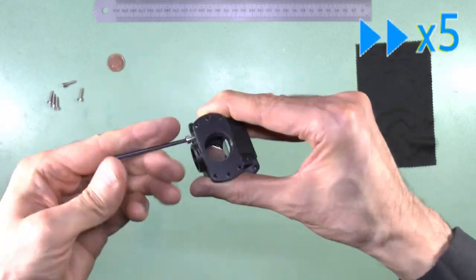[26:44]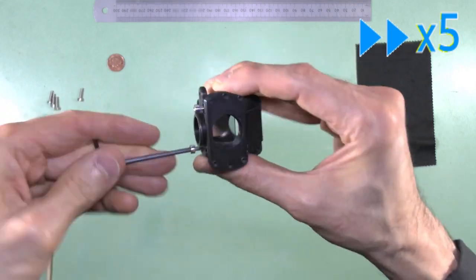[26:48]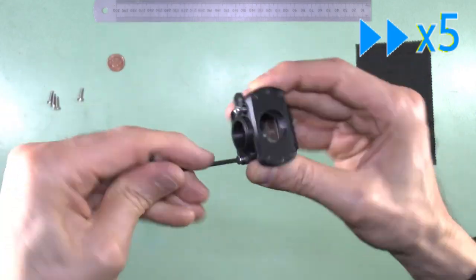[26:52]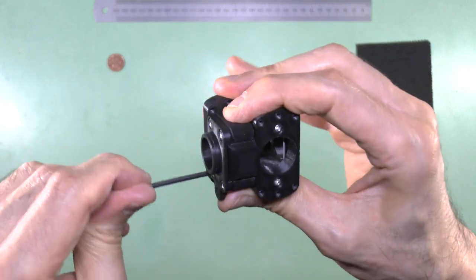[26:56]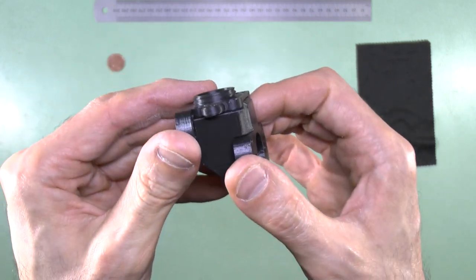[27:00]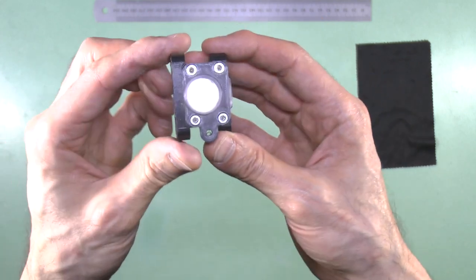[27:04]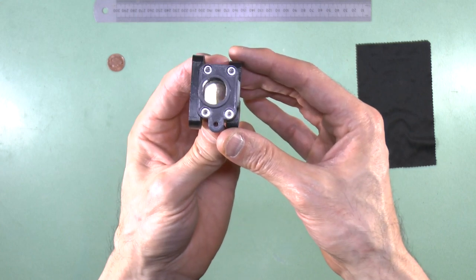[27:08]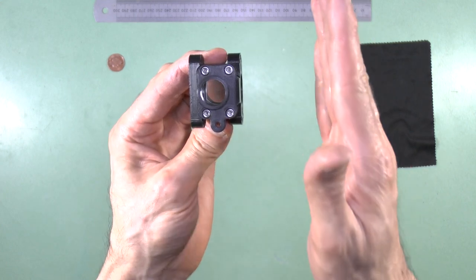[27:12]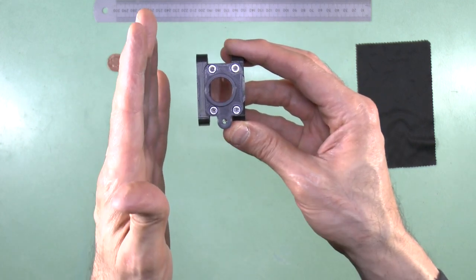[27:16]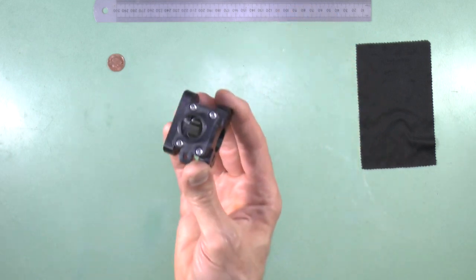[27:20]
There we are. And in regards to the dust, use an air duster.
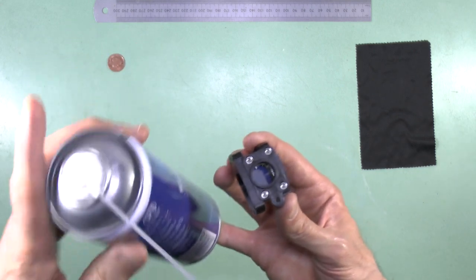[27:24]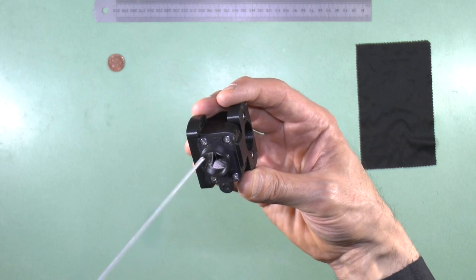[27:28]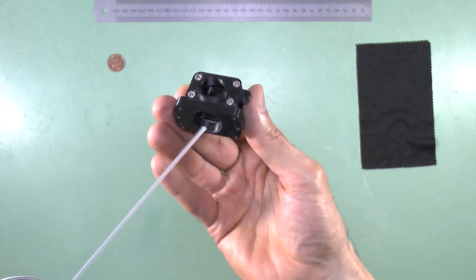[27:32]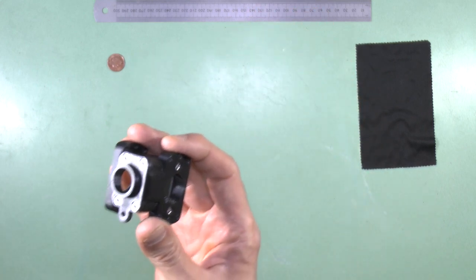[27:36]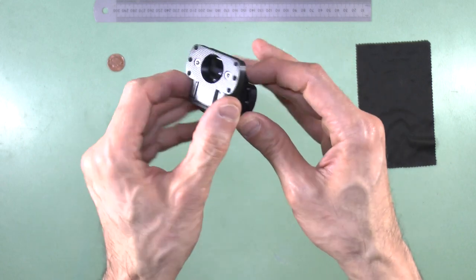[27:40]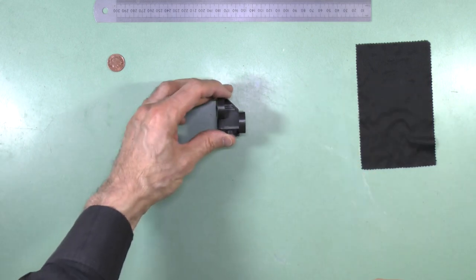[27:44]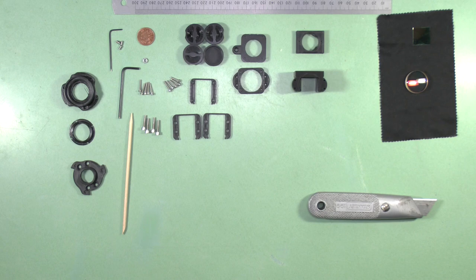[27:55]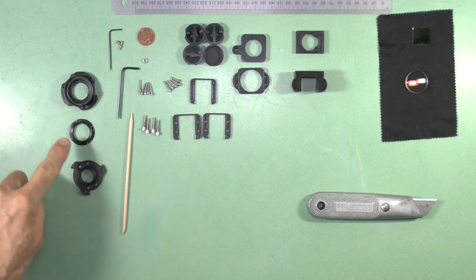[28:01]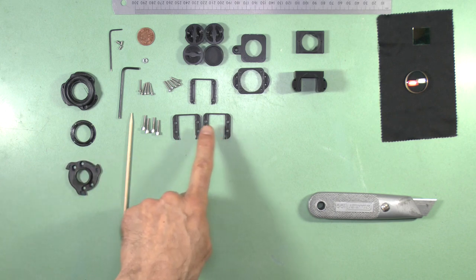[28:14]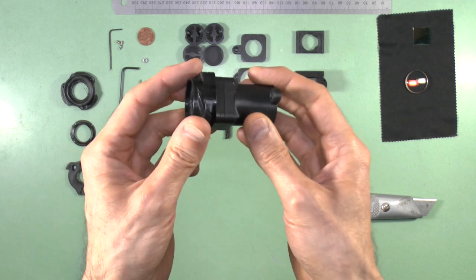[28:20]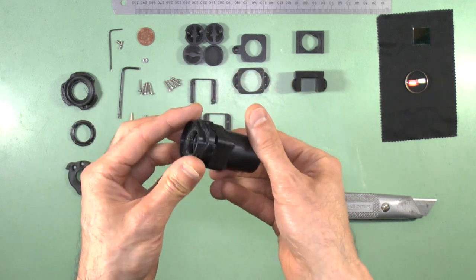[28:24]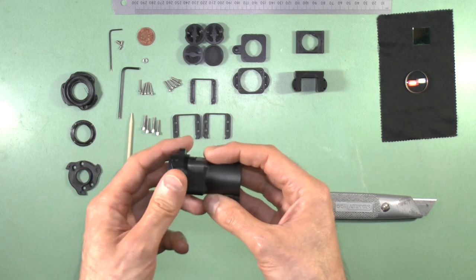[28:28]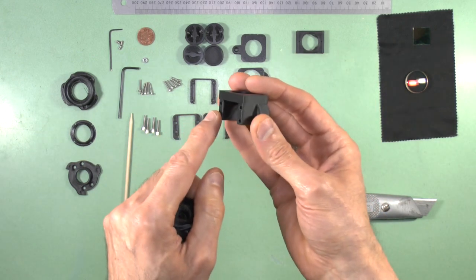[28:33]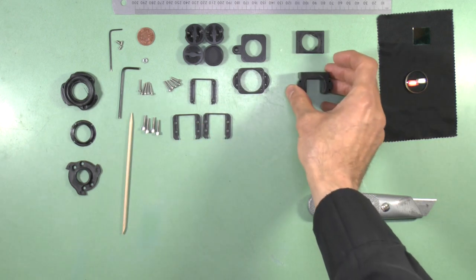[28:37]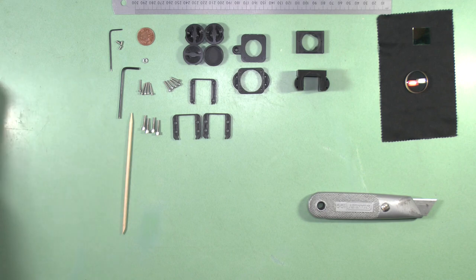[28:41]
These are the parts and the tools you'll need to build the advanced filter block. The quick release mechanism for the stage and the RMS thread were described in the video on how to build the foundation scope, as was the base thread of the simple filter block and the two lower filter slots, held together by these four screws. Here you can see the simple filter block with those components in place. The only difference in this case is that instead of these screws going into the simple filter block base, they will instead fit into the base of the beam splitter casing of the advanced filter block. So I won't repeat the details of construction of those lower parts here.
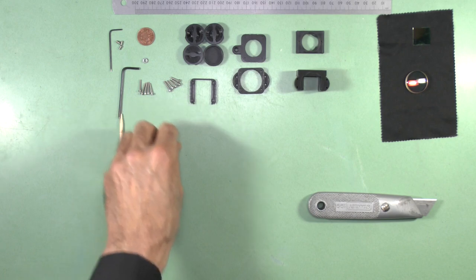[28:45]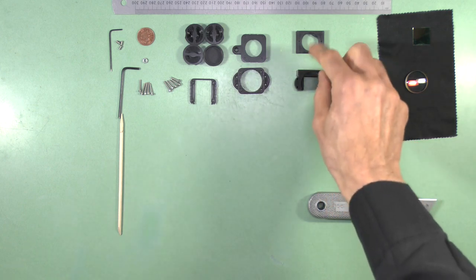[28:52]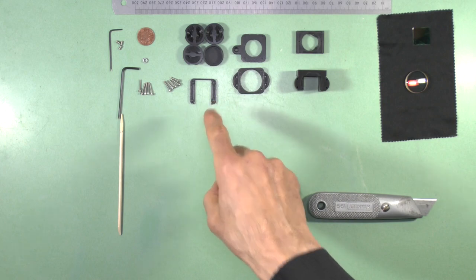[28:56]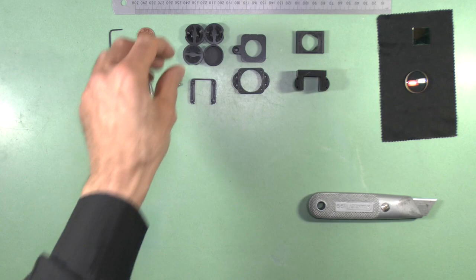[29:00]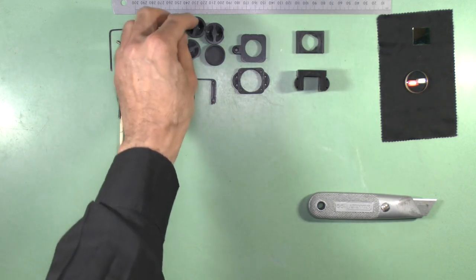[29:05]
In addition to printing the beam splitter casing and the upper components, including the upper filter block, you should also print some of these aperture protection plugs so that you can prevent dust from entering into the system when not in use.
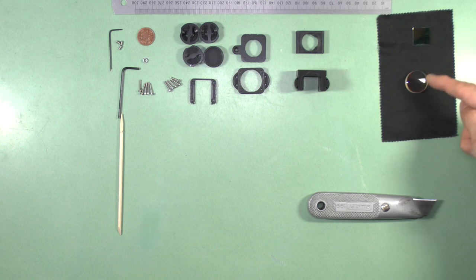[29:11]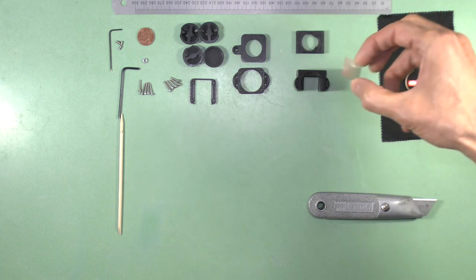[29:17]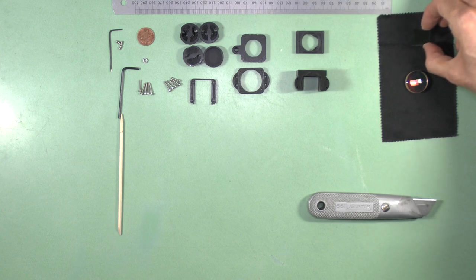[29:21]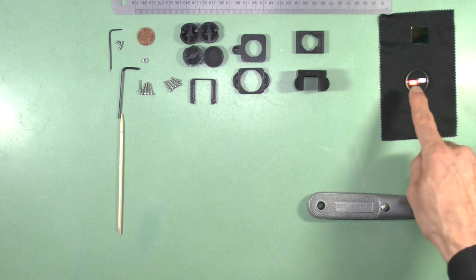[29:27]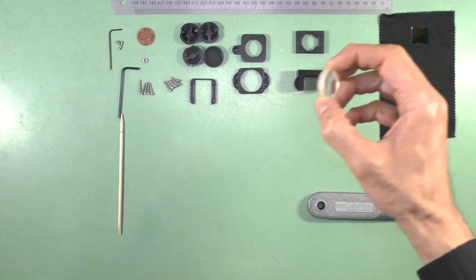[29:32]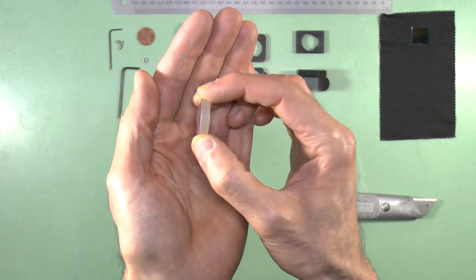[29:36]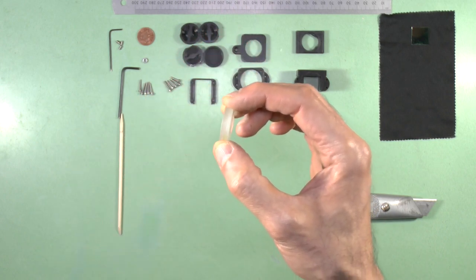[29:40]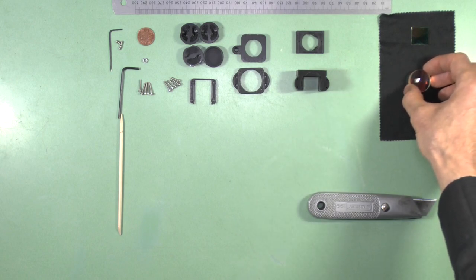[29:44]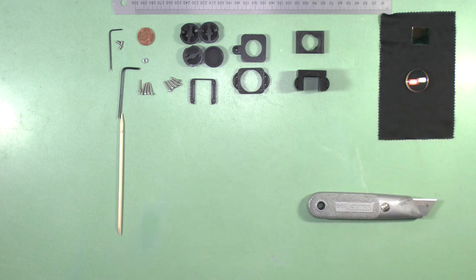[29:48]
Now, there are two optics that we use for the advanced filter block, only one of which is essential, and that is this semi-silvered beam splitter plate, which is exactly the same as the plate beam splitter used in the binocular head construction. This lens is a 100mm focal length lens. As you can see here, it's a doublet lens. And this is only used as an option for those who want to use infinity corrected objectives in the microscope. For most normal use, we do not use that infinity tube lens.
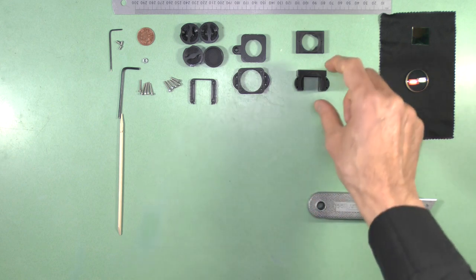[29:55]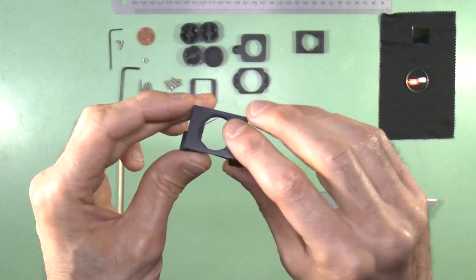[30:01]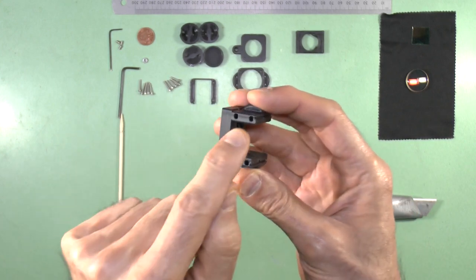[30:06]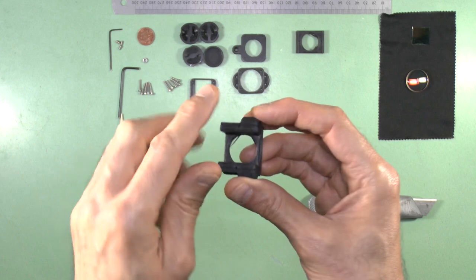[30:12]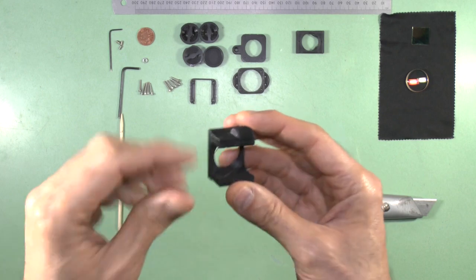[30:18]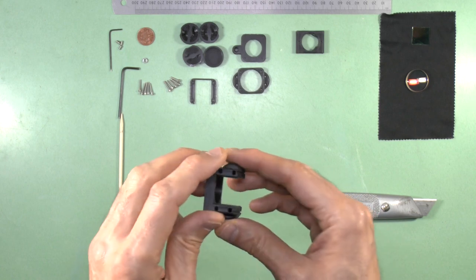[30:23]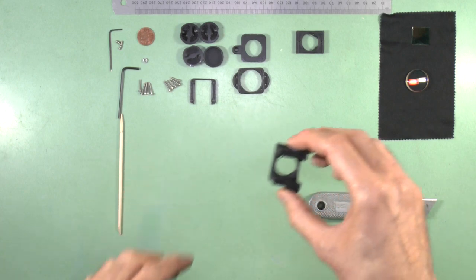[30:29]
Now, the first step, as always, when constructing, is to clear away any stray plastic threads and any non-printed parts. And again, I advise that we thread these holes prior to inserting the splitter glass to avoid manipulating the beam splitter block and getting dust everywhere after inserting the optics. So, I'll clean up these prints, I'll thread the holes, and we'll come back to the rest of the construction.
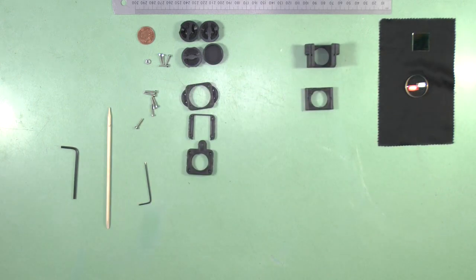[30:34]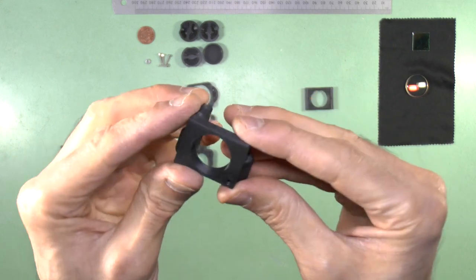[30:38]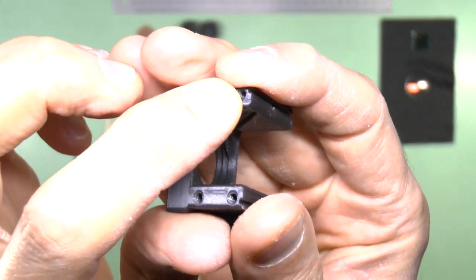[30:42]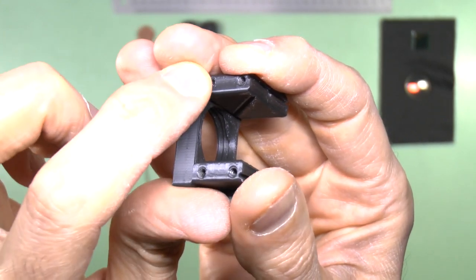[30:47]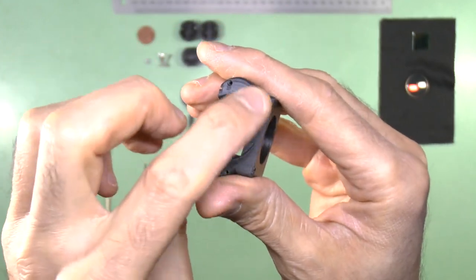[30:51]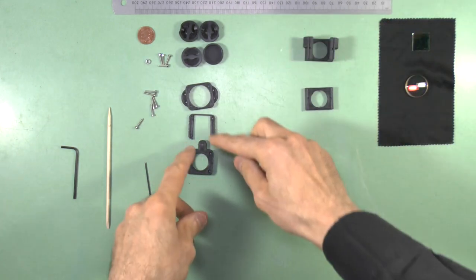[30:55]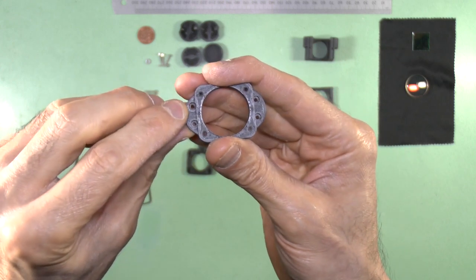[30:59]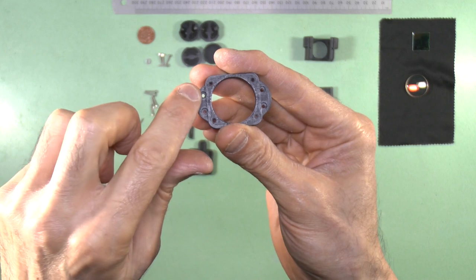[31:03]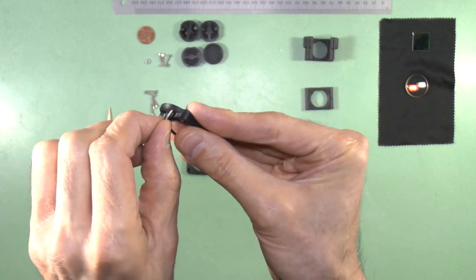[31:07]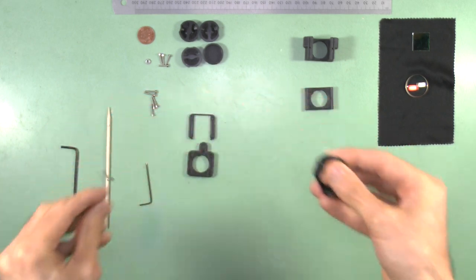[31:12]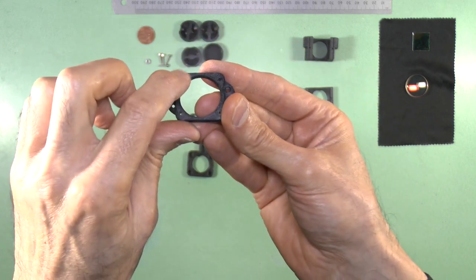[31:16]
Now I've cleaned up the prints, and I've threaded the holes, as you can see here, for example. Holes have got threads in them. These are with M3 screws, these are with M2 screws, and these are also M2 screw threads. As for the top parts of the assembly, these holes on the side are larger than the holes on here because these holes are meant to accept an M2 screw to go straight through it, not to be threaded, like that. Whereas these other holes, the smaller ones, are intended to be threaded by an M2 screw, so they are
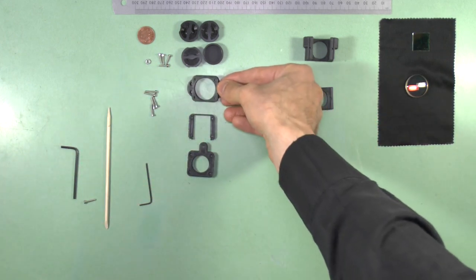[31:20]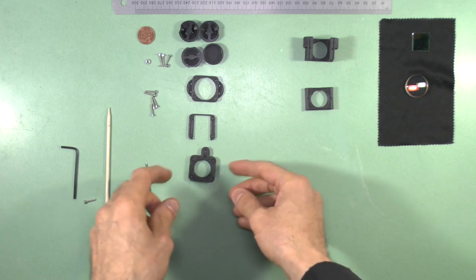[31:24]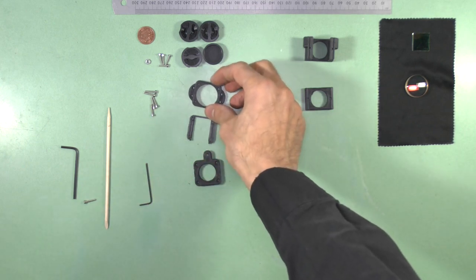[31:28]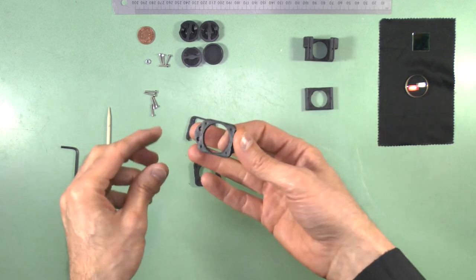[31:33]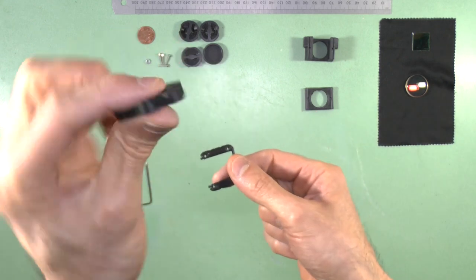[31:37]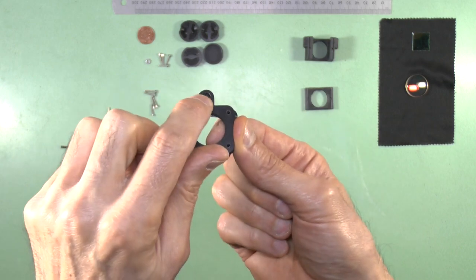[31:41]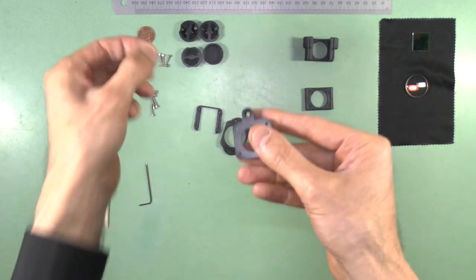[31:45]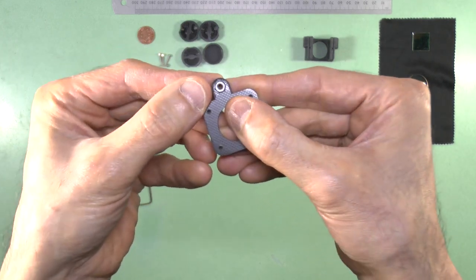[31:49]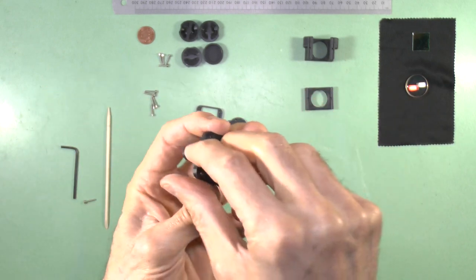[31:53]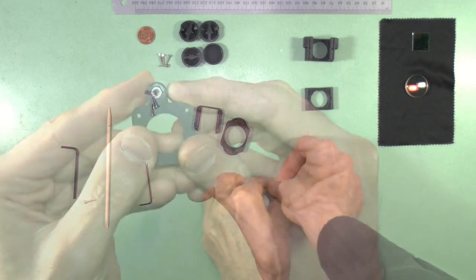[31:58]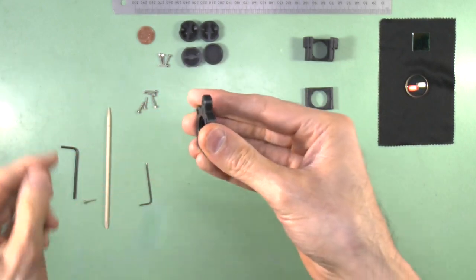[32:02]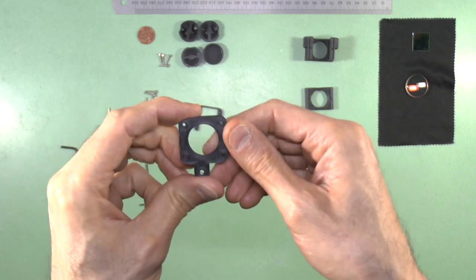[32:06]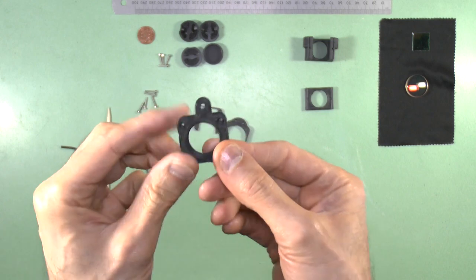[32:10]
smaller. So first we'll assemble these top components, which is the upper filter slot and the cavity for the optional infinity tube lens. So this is the very topmost component, and under here we have a hexagonal recess which is for an M3 nut, like that. So that needs to be pushed in there with some pressure. And you can pull that all the way through by putting a screw in from this end and pulling it through. Okay, so now this is the undersurface, this is the top surface.
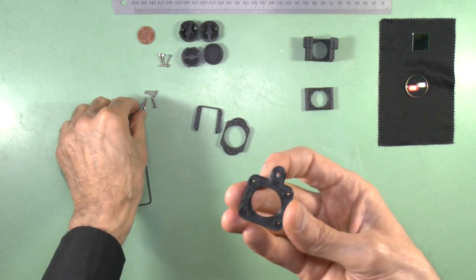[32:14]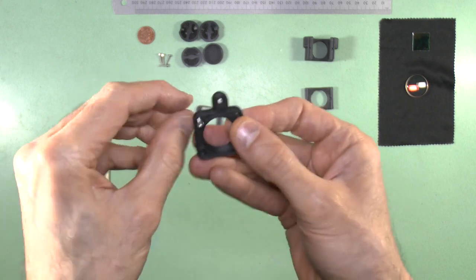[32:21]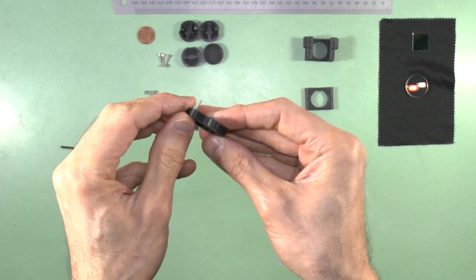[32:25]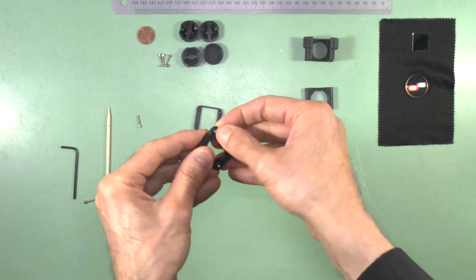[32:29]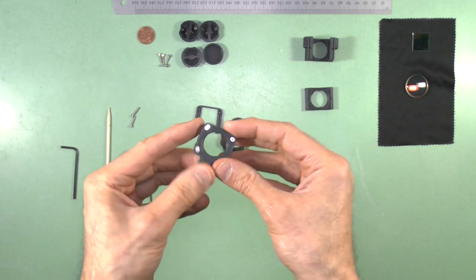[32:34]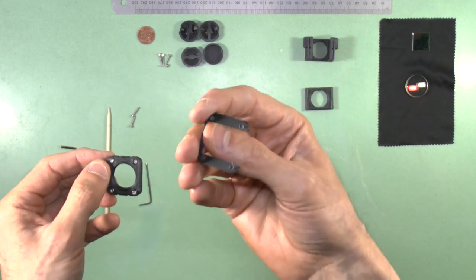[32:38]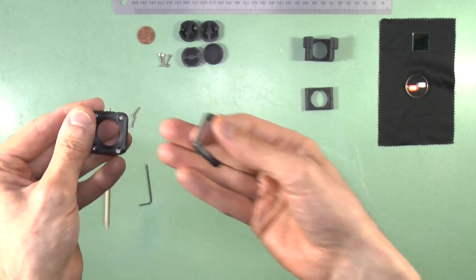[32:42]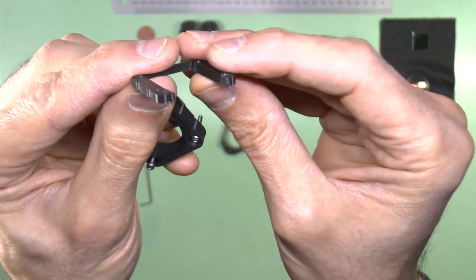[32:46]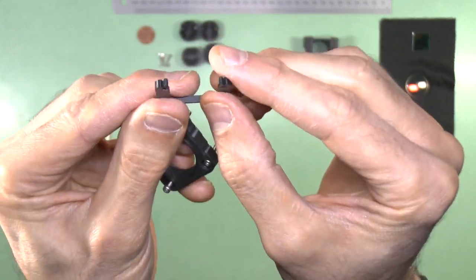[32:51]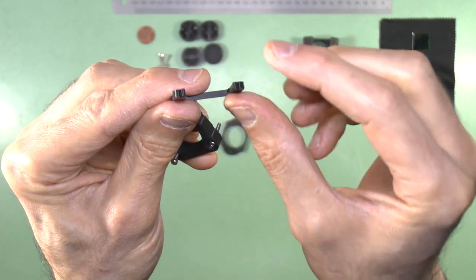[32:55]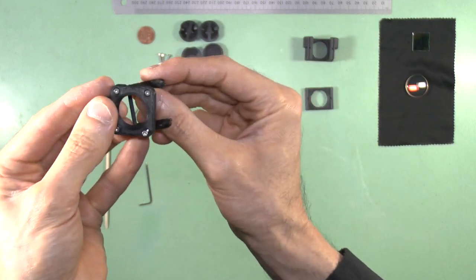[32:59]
So we want the four longer M2 screws to go in here. These holes are not supposed to be threaded, so the screws just go through like that. Okay. And then this is the front, this is the back. We put on the top filter slot. Top filter slot opening must face the back. And these ridges on the filter slot at the bottom here, these are the bottom ridges. You can just see that on edge there, it's a slight ridge, that's the bottom. So it goes in like this, with the ridges facing downwards.
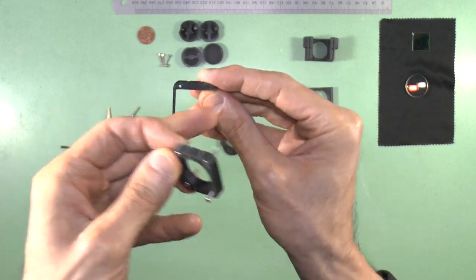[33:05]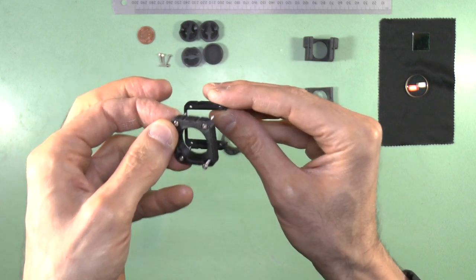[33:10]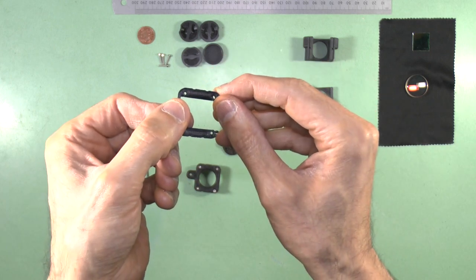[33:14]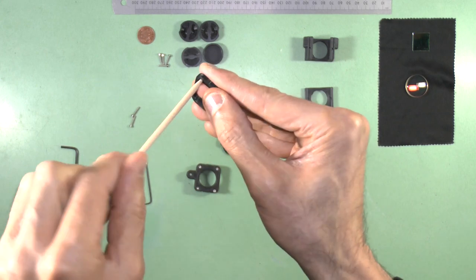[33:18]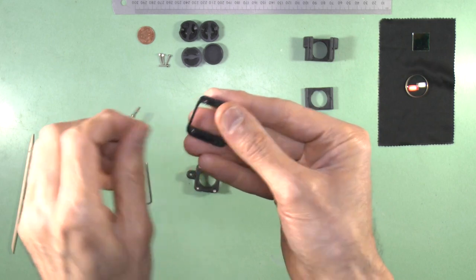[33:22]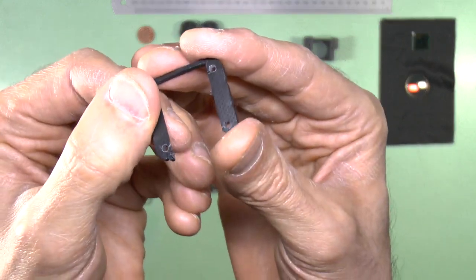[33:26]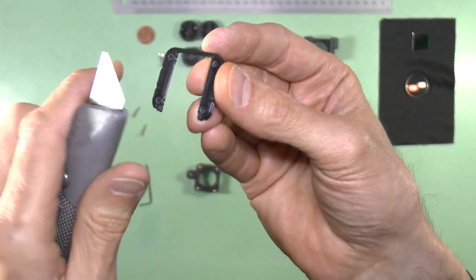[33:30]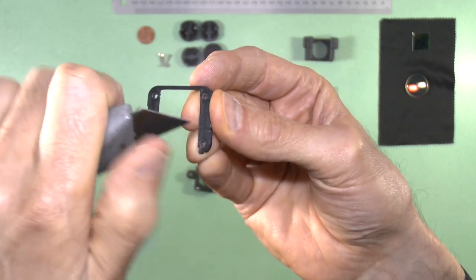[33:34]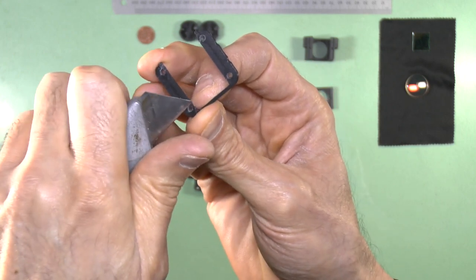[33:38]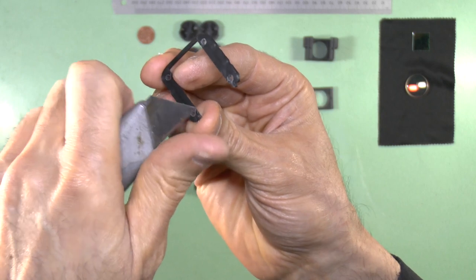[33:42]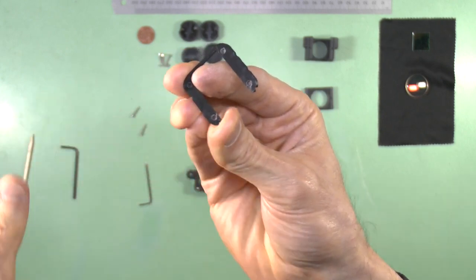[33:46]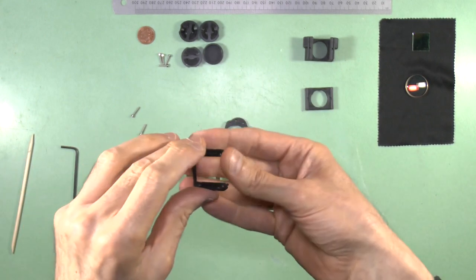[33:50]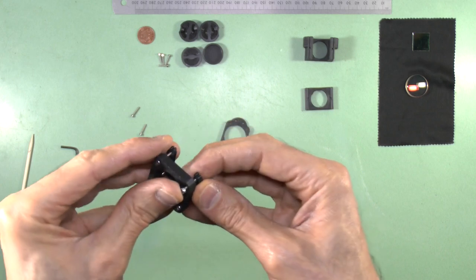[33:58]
And again, these holes are not supposed to be threaded, the screw is supposed to go straight through it, although it may be printed a bit tight. And so you may need to widen the holes a bit with some implement if the screw doesn't go through. And if you widen the hole, make sure that you clean away from the top surface any plastic that's been squashed out, because you want this surface to be flat. You don't want any extruded plastic, pushed out plastic to be proud of the surface. Okay, so this is the bottom aspect, and we want this to therefore be fitted like that through these M2 screws through those holes.
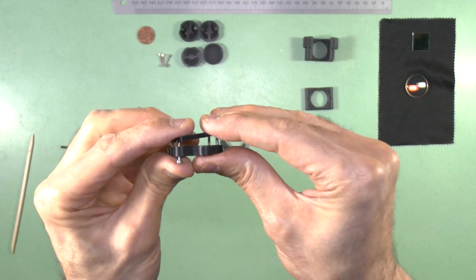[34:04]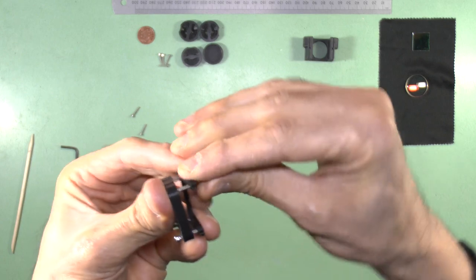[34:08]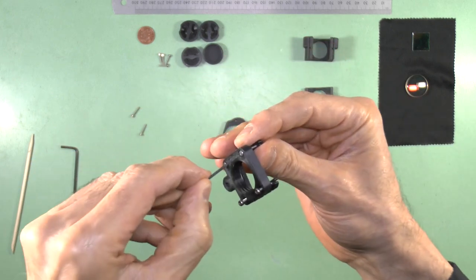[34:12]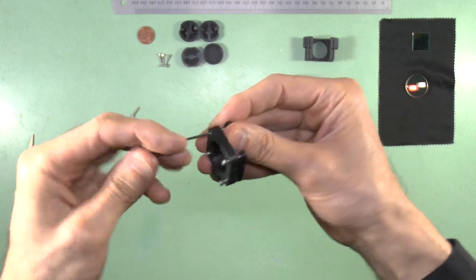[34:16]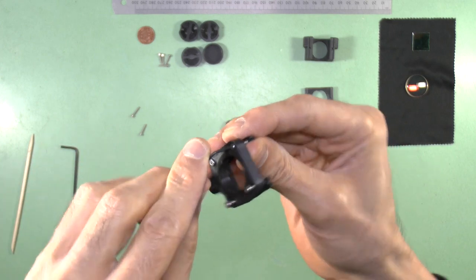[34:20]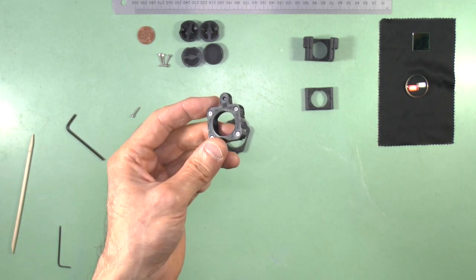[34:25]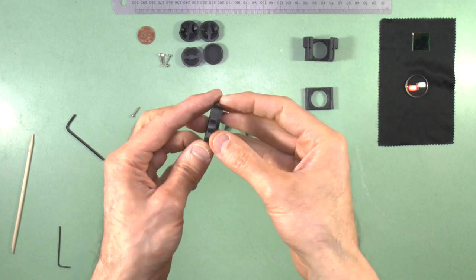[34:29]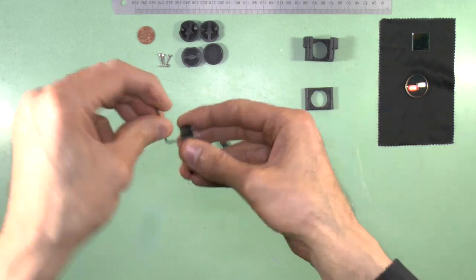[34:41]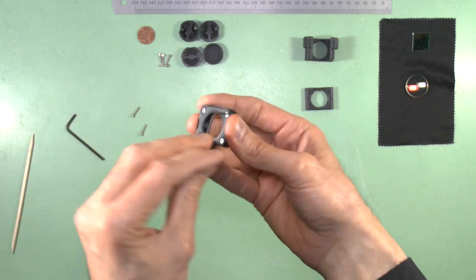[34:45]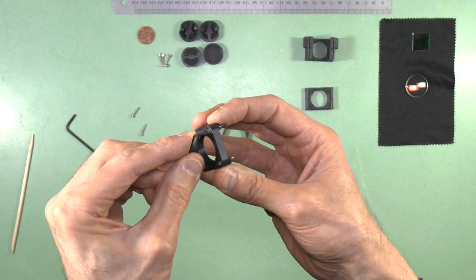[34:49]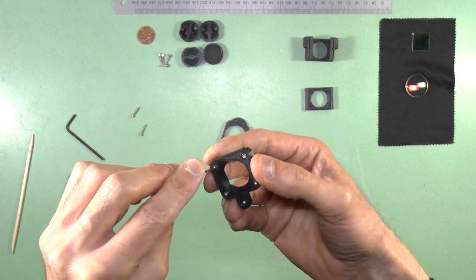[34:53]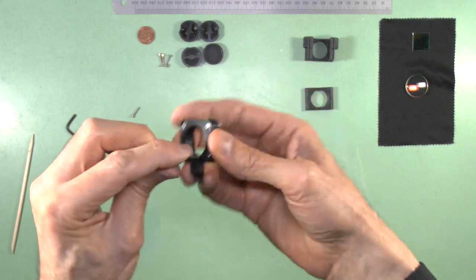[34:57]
And if it's still a bit too tight, you can just thread them through, but the thread is not supposed to catch. So that one is very tight still, even though I've widened the hole. So I'll just do that. And so I've threaded it all the way to the end, even though they're not meant to be threaded holes. Because they're a bit tight, I had to thread them. So I advise, once you've got it all the way to the end, before you do anything else, deliberately break the thread by moving the screw around clockwise a few times. And that should break whatever thread that you've done, because you don't really want a thread on the filter part.
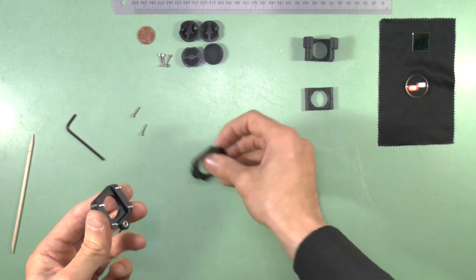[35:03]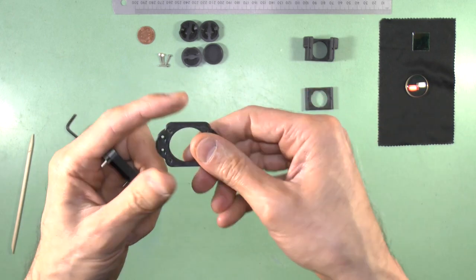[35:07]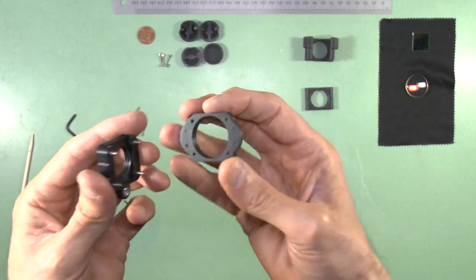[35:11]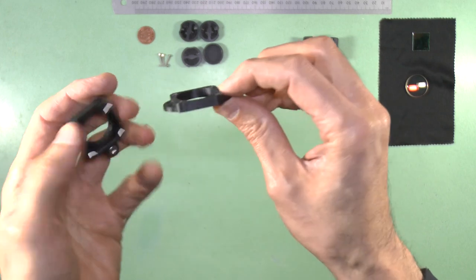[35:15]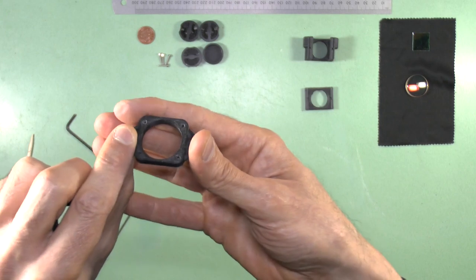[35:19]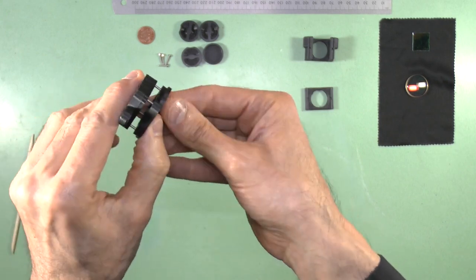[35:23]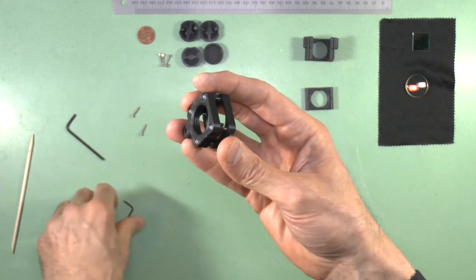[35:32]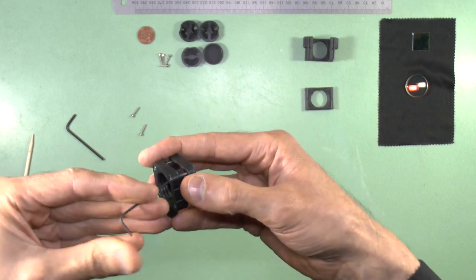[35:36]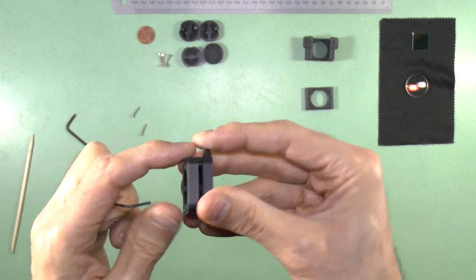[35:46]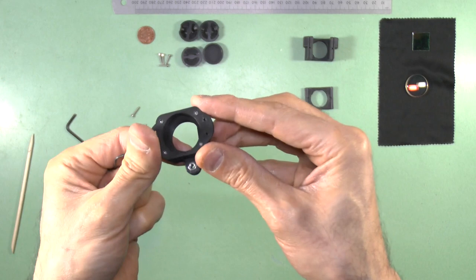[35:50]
Okay. And now we can fit it to the receptacle for the infinity tube lens. And this is symmetrical, there's no front or back as such, but you just need to make sure that these lips here, these flanges, face downwards. Okay, so that can go on like that. So the flanges face downwards. That's the important orientation here. And now these are threaded holes, or holes that should be threaded. So you carefully and slowly thread this in. Okay, so now that's ready.
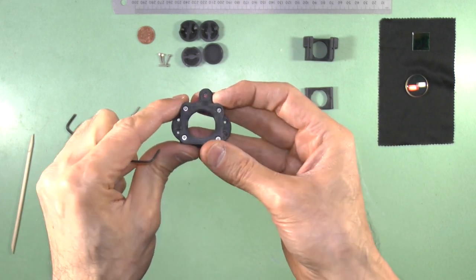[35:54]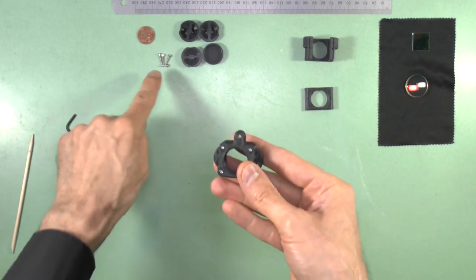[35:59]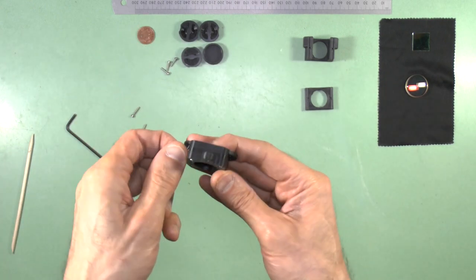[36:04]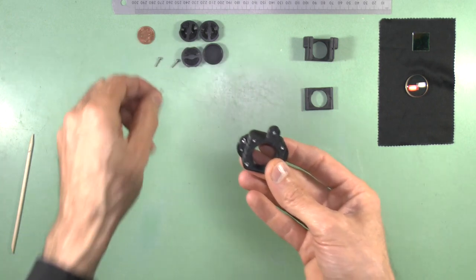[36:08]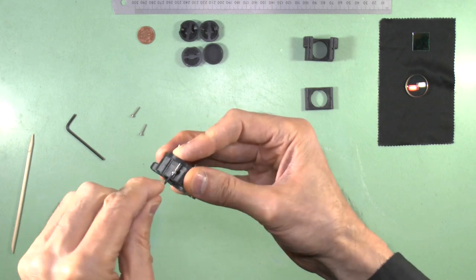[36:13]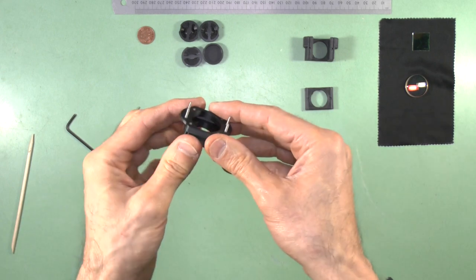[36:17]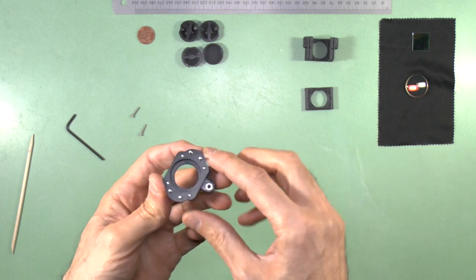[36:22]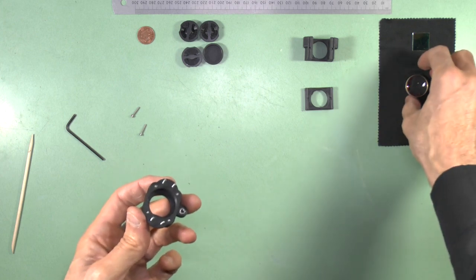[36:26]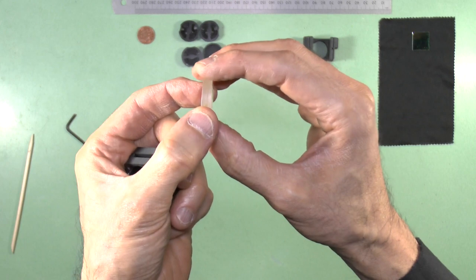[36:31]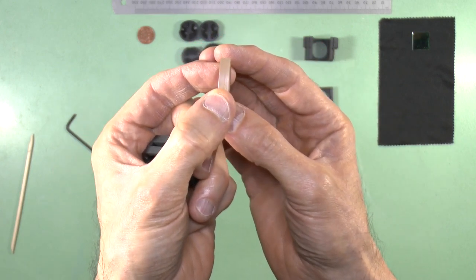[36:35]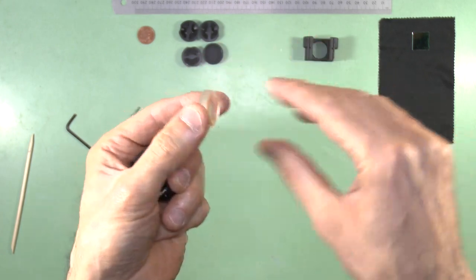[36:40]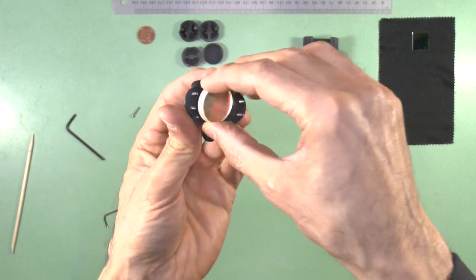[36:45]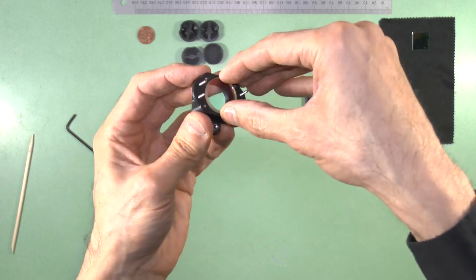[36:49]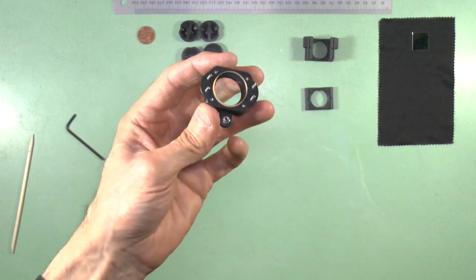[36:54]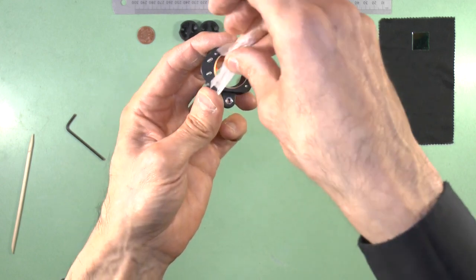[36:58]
The next thing to do is just to put these shorter screws through here, ready to connect to the main splitter case. If you were going to use the infinity tube lens, that would go inside this cavity. And if you have a lens like this, if one of the surfaces is more curved than the other, I would use the more curved surface to face the splitter block and the flatter surface to face upwards. And that will go inside here, all the way in. Like so.
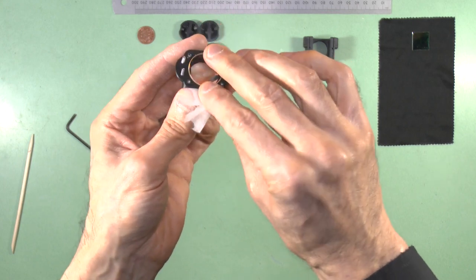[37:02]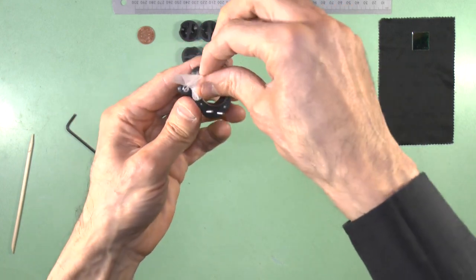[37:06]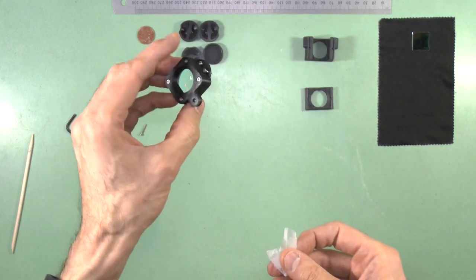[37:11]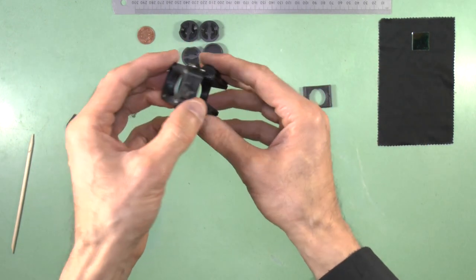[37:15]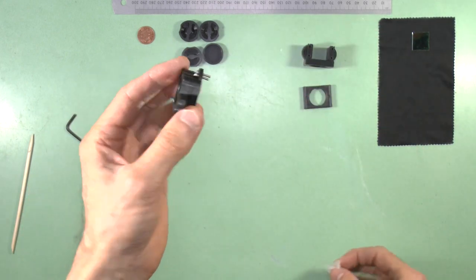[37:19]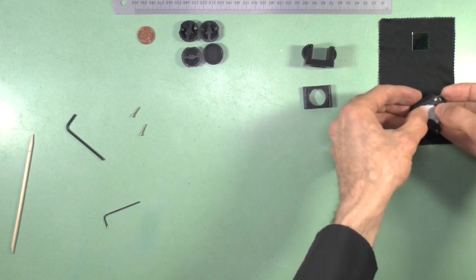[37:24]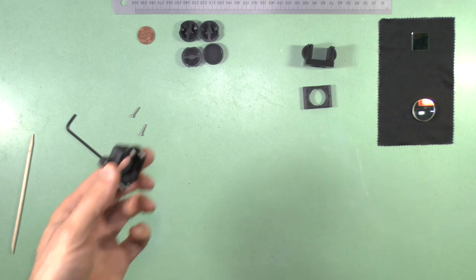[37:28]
So that would be how you would insert the infinity tube lens, and that would go onto the splitter block like so when we insert it. But I'm not going to use the infinity tube lens, so we'll just push that out. Okay. But that's how you would do it if you wanted an infinity version.
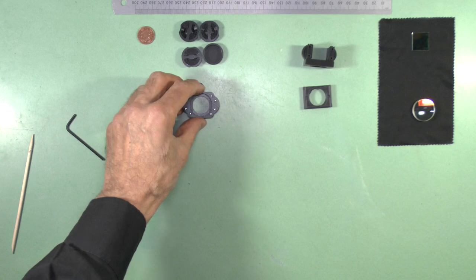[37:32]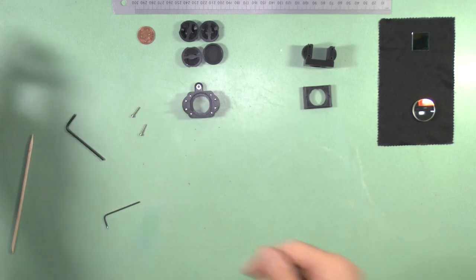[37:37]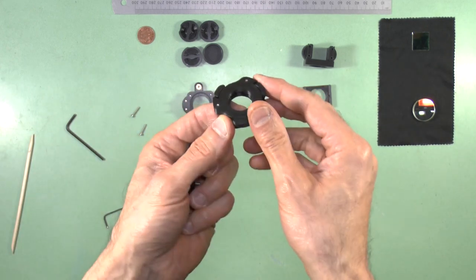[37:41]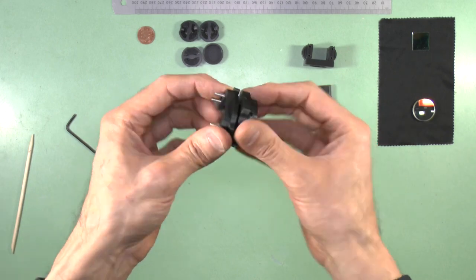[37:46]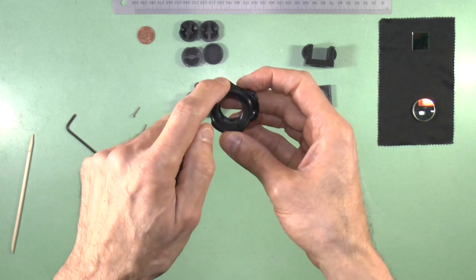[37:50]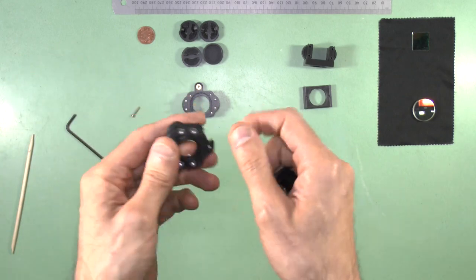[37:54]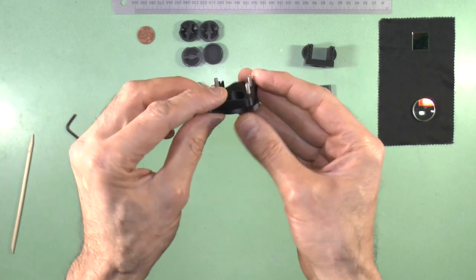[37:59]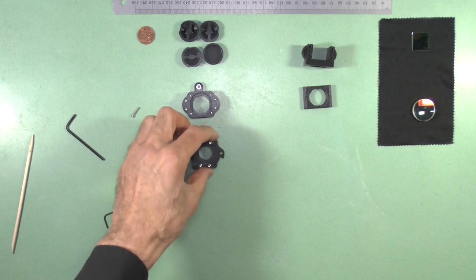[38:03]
So now we have the top part, and here is the bottom part which I prepared earlier. So this is the RMS thread adapter, and this is the base thread, and they will screw together, and these grub screws will be used to fix it in place. But I'm not going to attach this just yet. Here are the two lower filter slots and the base thread. We'll use that in a moment.
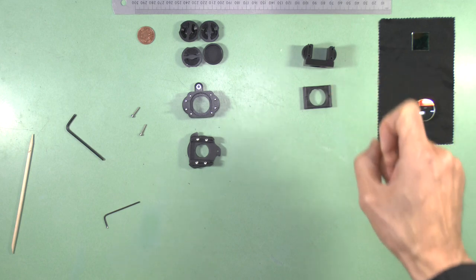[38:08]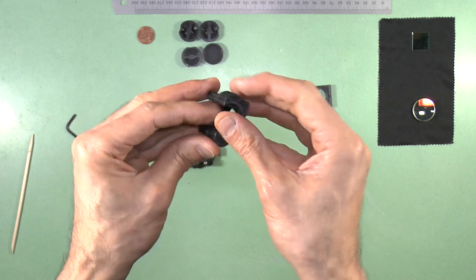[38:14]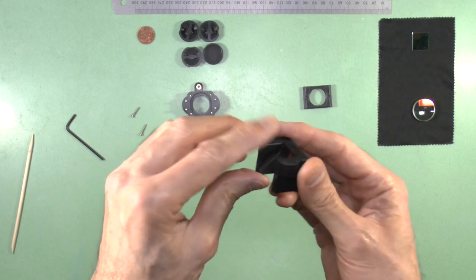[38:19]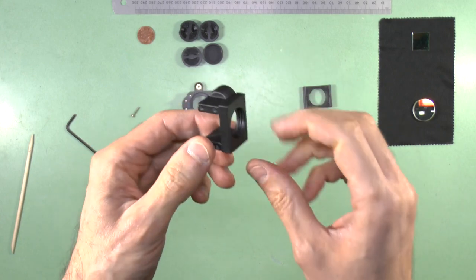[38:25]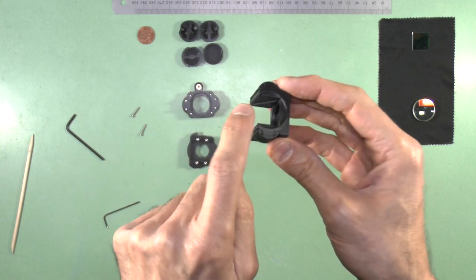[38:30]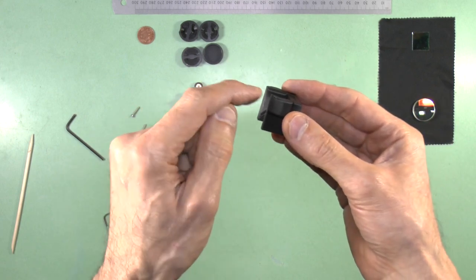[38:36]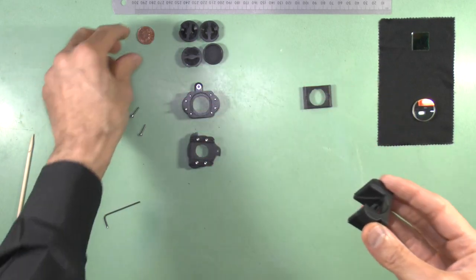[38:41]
So now to inserting the splitter glass into the splitter block. And the way to do this is first you have to separate these two arms a bit. And we do that with a penny. And you want to insert the splitter glass such that the coated surface of the splitter glass faces this open edge. Okay, so it's going to be like that, and the coated surface has to be facing this side, not that side. Okay, so we'll get our penny and we'll insert it.
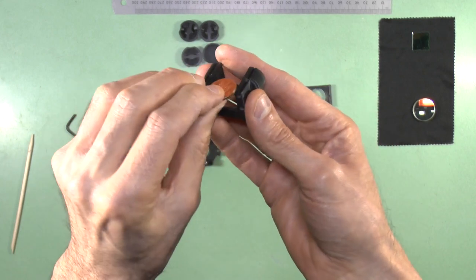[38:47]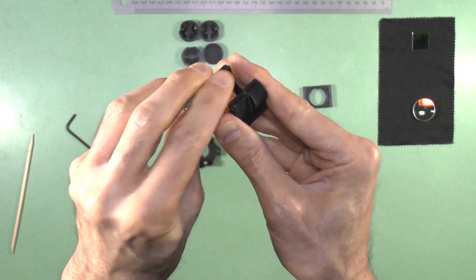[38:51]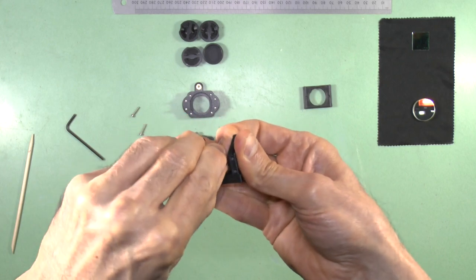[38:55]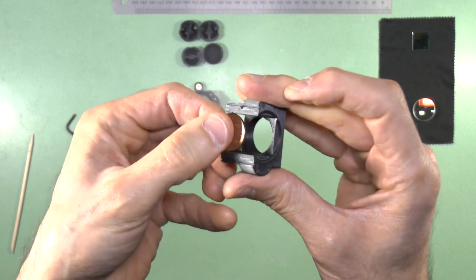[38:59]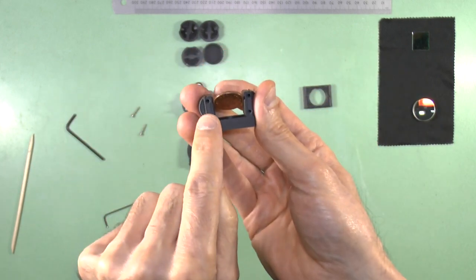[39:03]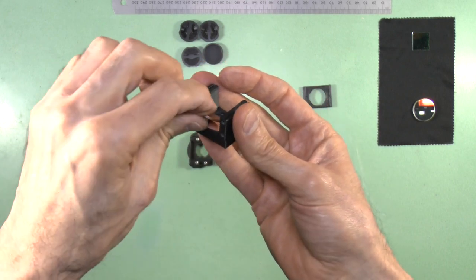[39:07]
So one penny piece. We'll insert it just underneath here, because you want to insert the penny on the side opposite the coating, not on the coating side, in case it touches the penny. We don't want to damage that coating. So the penny is now inserted. It's widened out the arms of the splitter block.
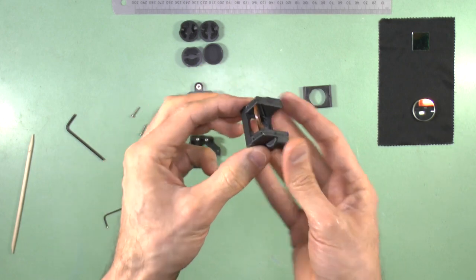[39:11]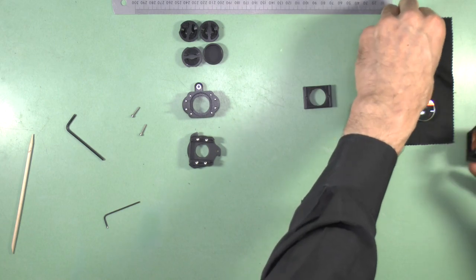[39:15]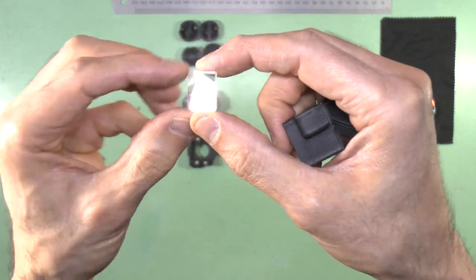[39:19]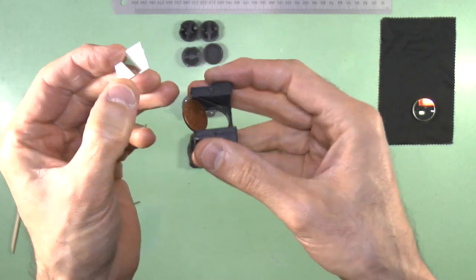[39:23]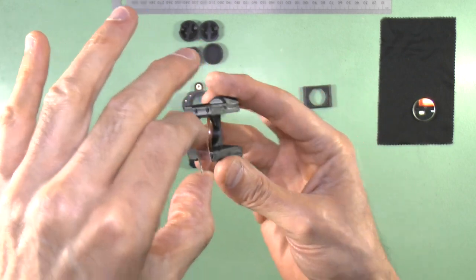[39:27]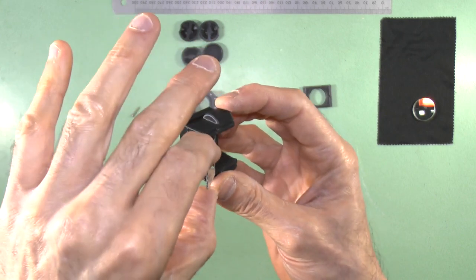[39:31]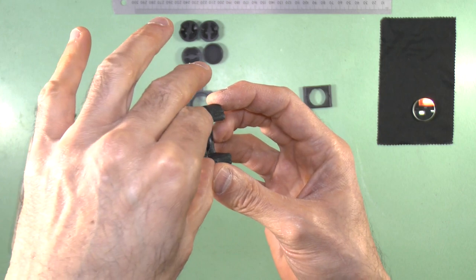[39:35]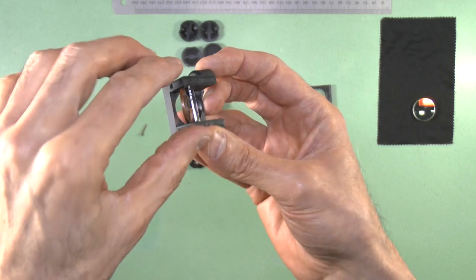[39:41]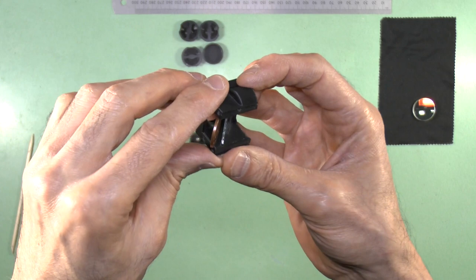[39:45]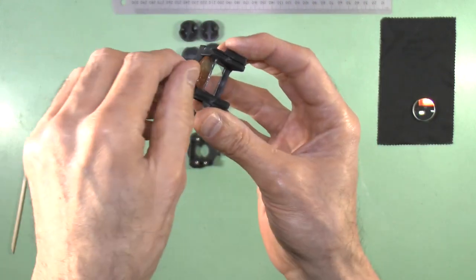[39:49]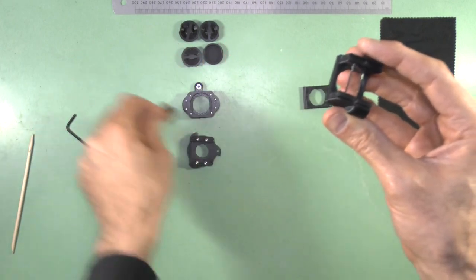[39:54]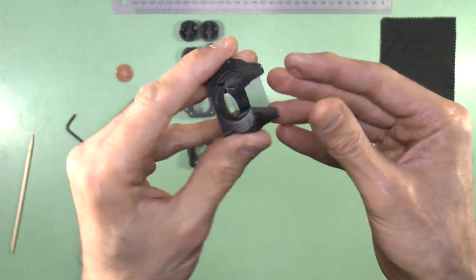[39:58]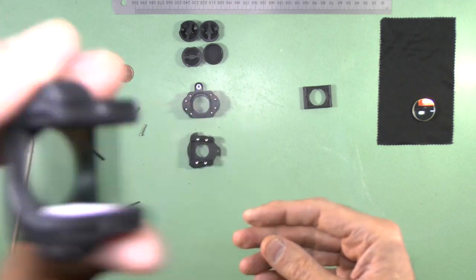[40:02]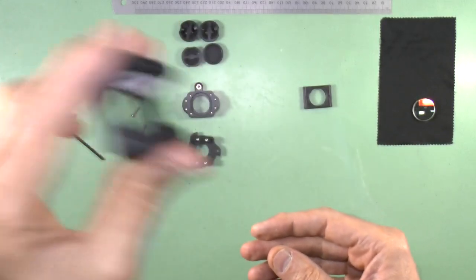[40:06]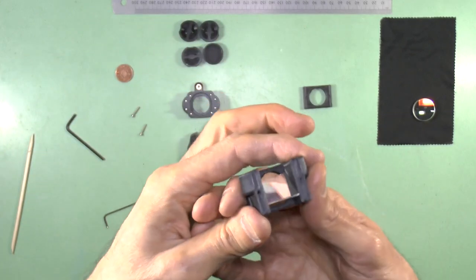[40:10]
So we can now insert the splitter, the coated surface, which is this surface here. That's the coated surface. And that is going like so. So we hold it vertically. Put a finger here in case it falls to catch it. And then we'll put it into the, there we are, like that. Carefully. There it is. And once it's in, just make sure it's in the groove. We can then carefully remove the penny. And if it's properly in the groove, you should be able to hear it rattle. Okay, so that's done properly.
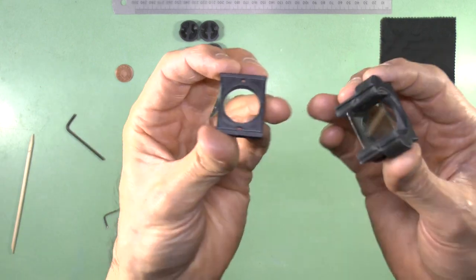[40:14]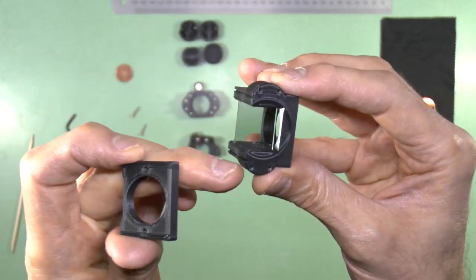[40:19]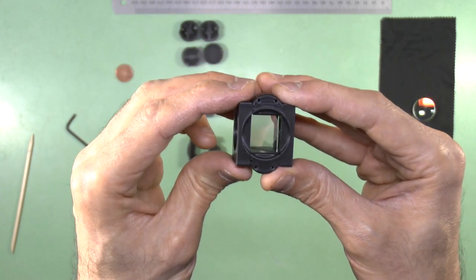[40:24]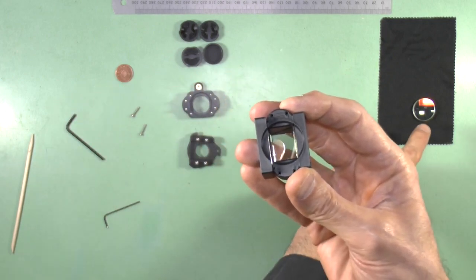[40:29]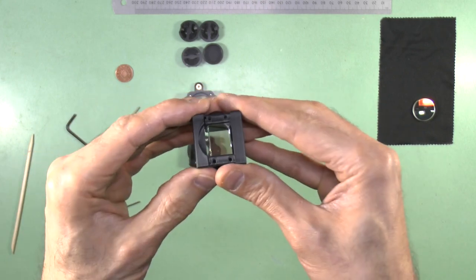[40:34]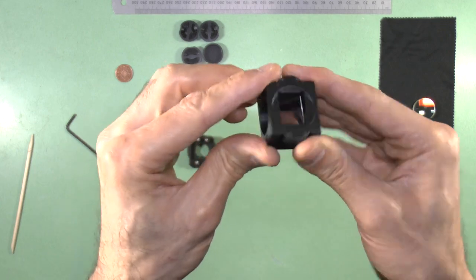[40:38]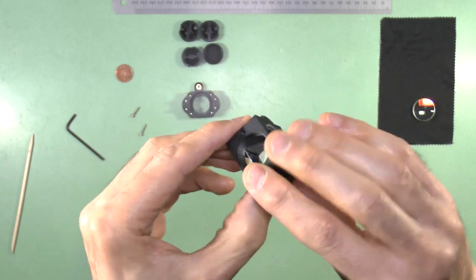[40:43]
Now, put the cover on. Now this cover has got grooves, you can see there, two grooves, one, two, to fit into these, tongue and groove. These are light seals to prevent light from getting in. And put it in the right way up, where you have this depression for the infinity lens. Okay, don't do it that way. That would be a mistake. So that's the correct way up. So those tongue and grooves fit into each other. And then we fix that in place with these two screws.
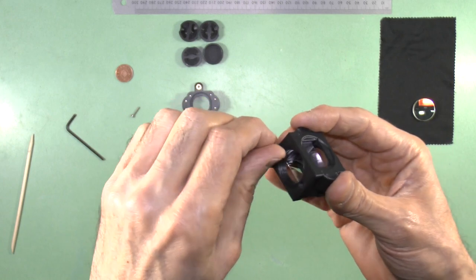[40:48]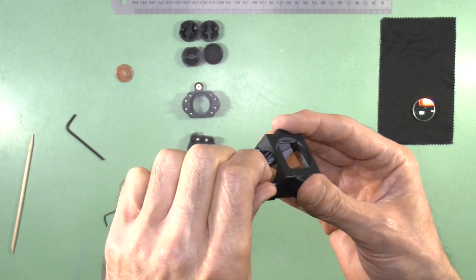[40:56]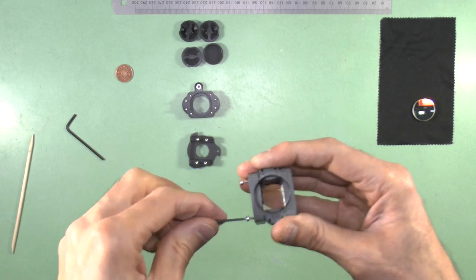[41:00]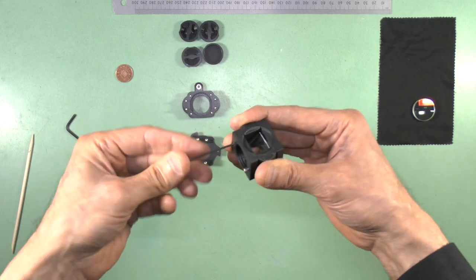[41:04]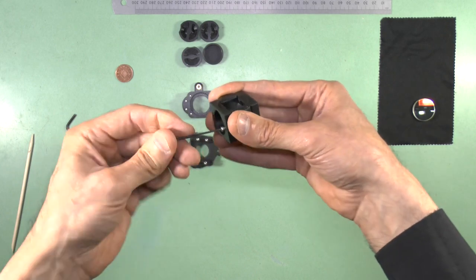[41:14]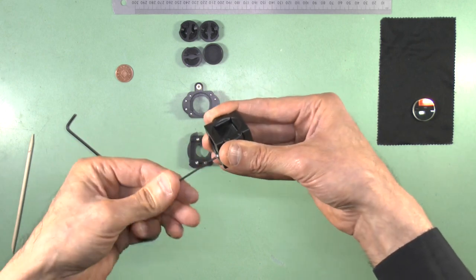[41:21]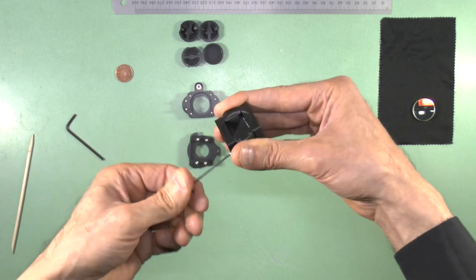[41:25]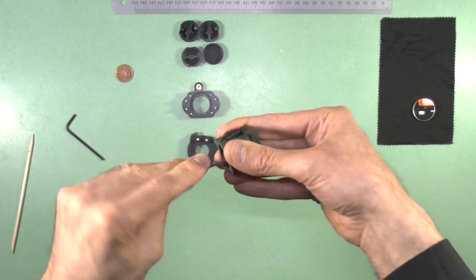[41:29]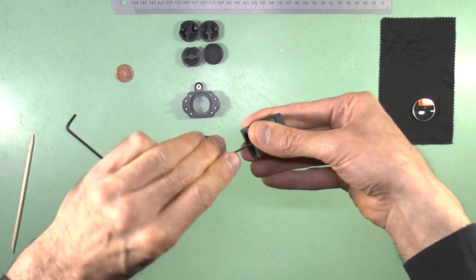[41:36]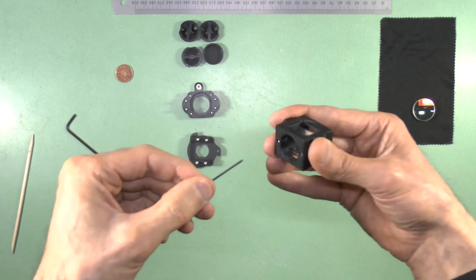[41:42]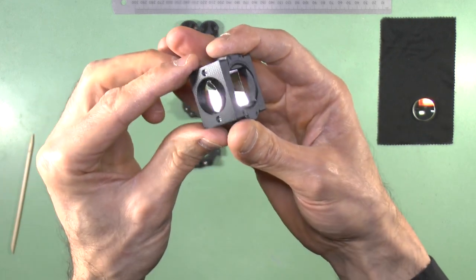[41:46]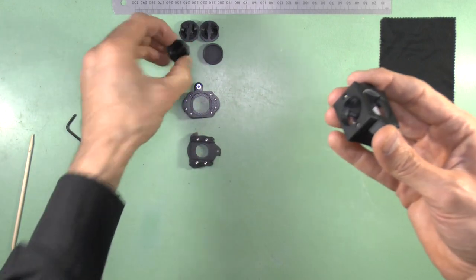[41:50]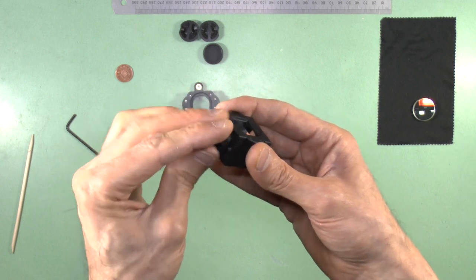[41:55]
Make sure the screws go all the way in till they stop, but don't over tighten them, because it's very easy to break an M2 metal on plastic thread. Also, be careful not to slip, or the Allen key may scratch the surface of your beam splitter. This is the side of the coated surface. There we are. So there we are. And before I go any further, I will protect exposed edges with these protector caps, like that.
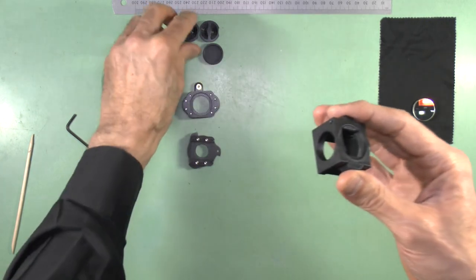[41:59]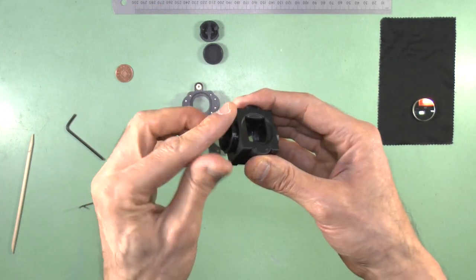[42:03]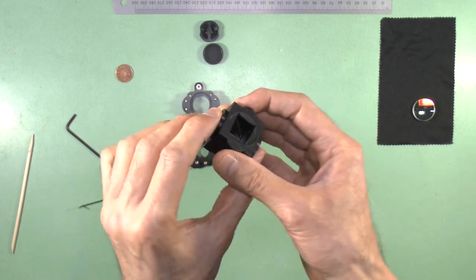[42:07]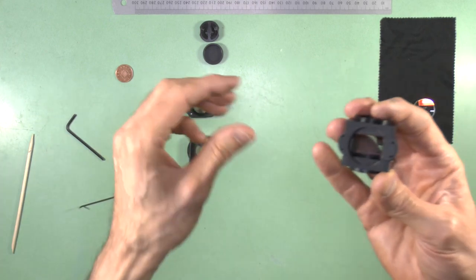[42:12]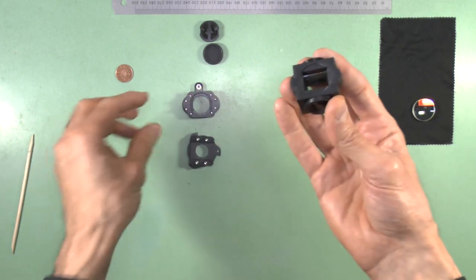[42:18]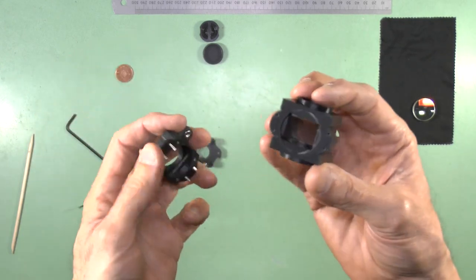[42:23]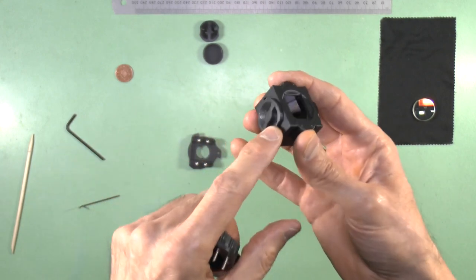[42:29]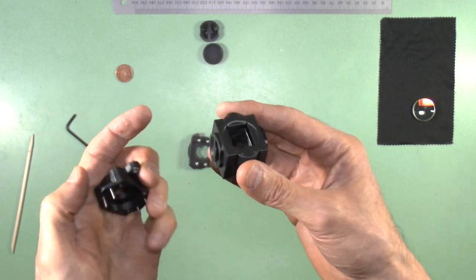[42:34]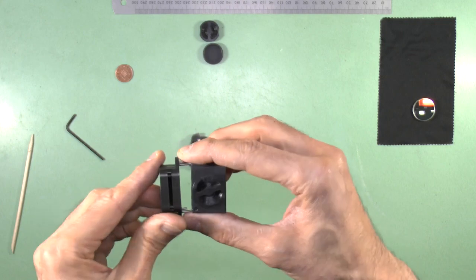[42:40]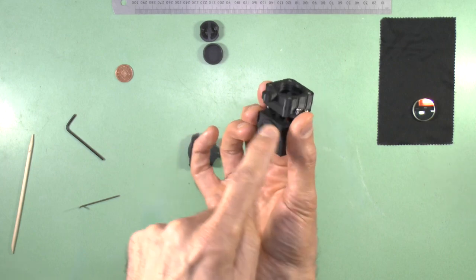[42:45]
Now we can insert the top and bottom components. So we see here the four M2 screws with these curved parts. That is for the top part. Now, the bit that we have just screwed on with screws, that is the front. That's where the augmented reality projector is going to go. So we know that this is also front, so it has to be like this, okay? So the part with the two screws and the lug both facing the same direction.
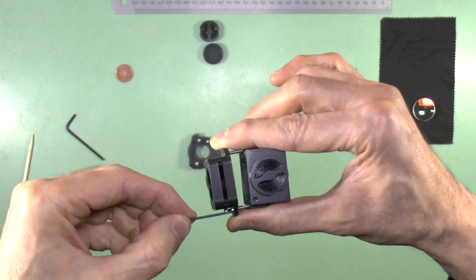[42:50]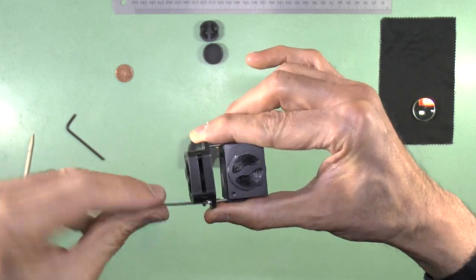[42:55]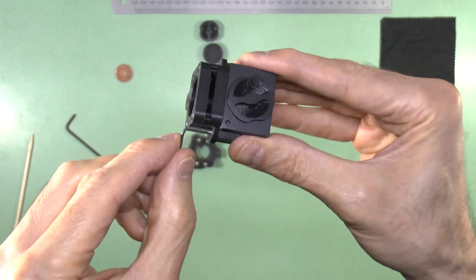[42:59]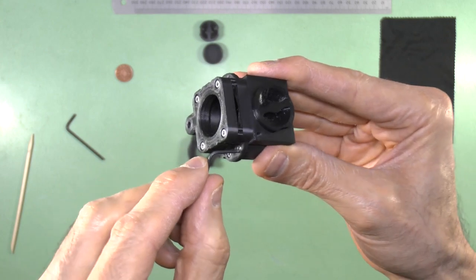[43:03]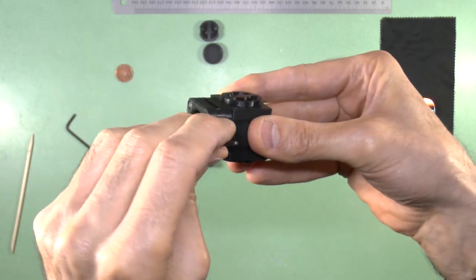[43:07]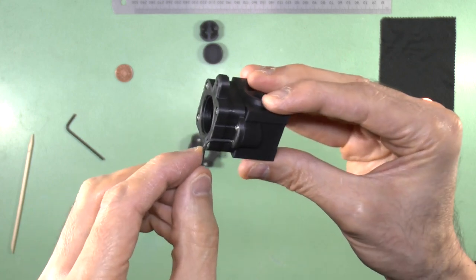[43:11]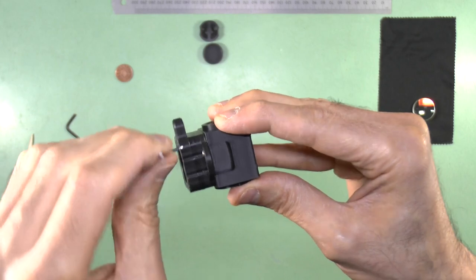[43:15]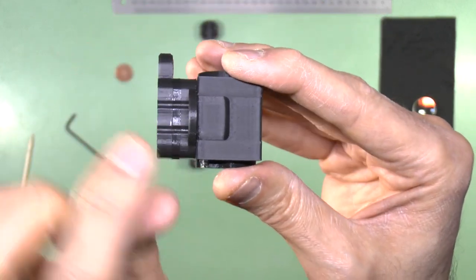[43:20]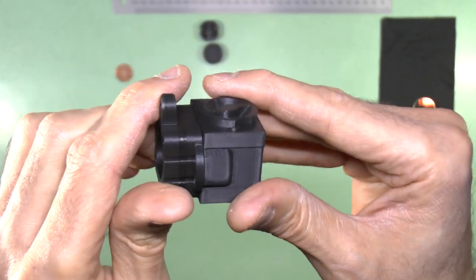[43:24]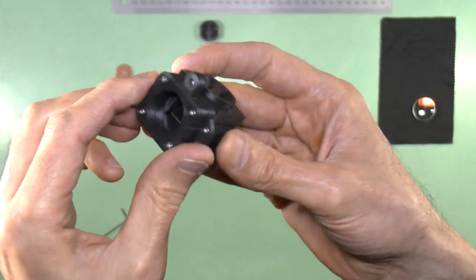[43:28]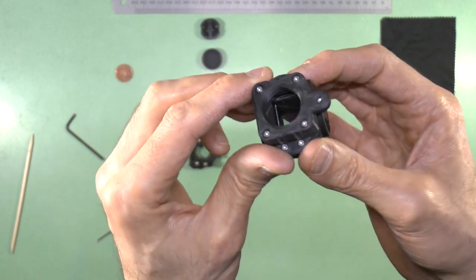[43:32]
And screw these in. When you come to the end, just be careful again not to put too much pressure on these M2 screws, or you'll destroy the thread. You don't want to see a gap in there, okay, in here. And again, we will protect it. So here's our splitter. Put a protector.
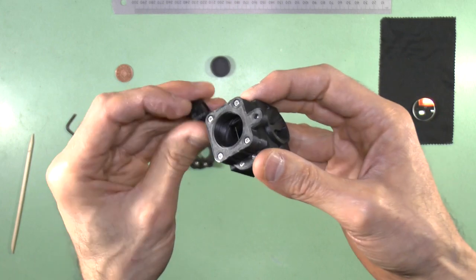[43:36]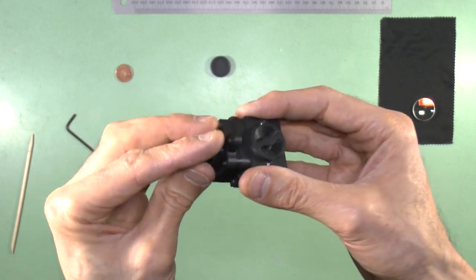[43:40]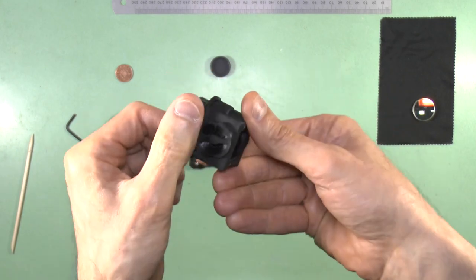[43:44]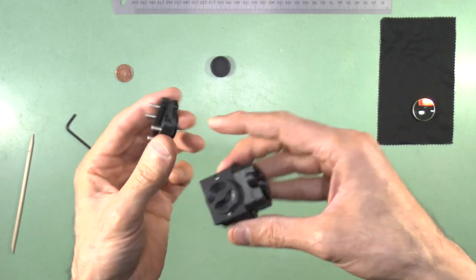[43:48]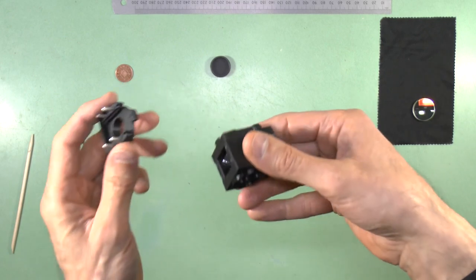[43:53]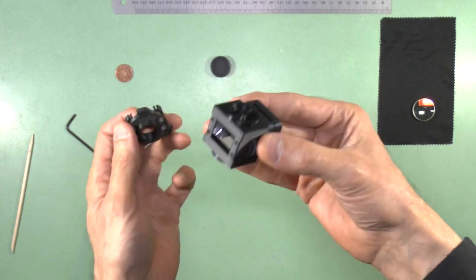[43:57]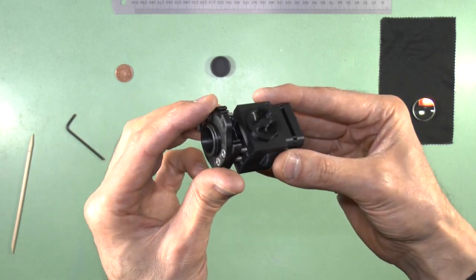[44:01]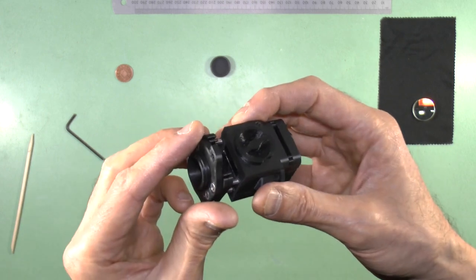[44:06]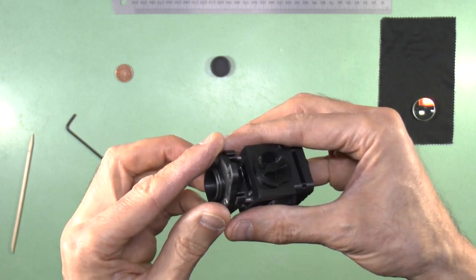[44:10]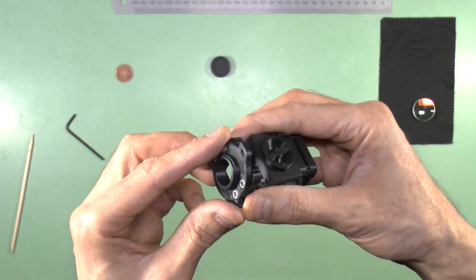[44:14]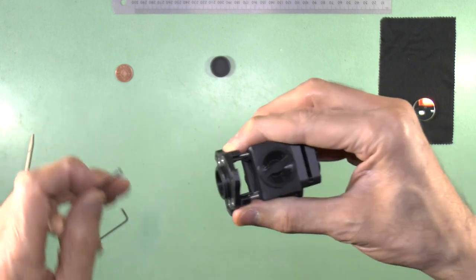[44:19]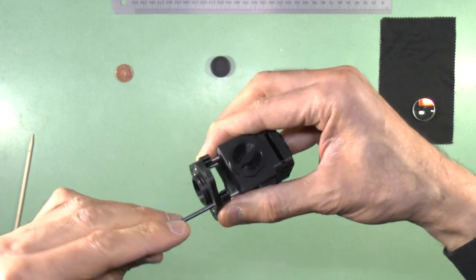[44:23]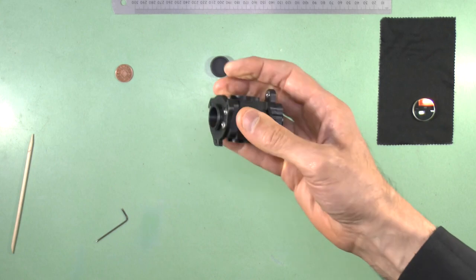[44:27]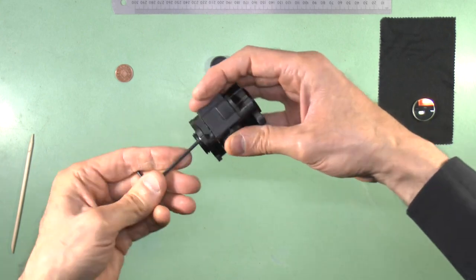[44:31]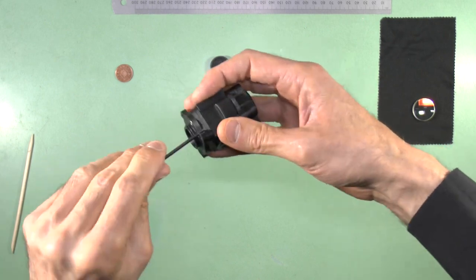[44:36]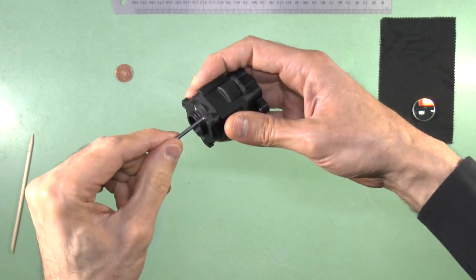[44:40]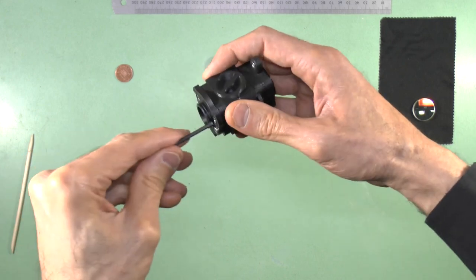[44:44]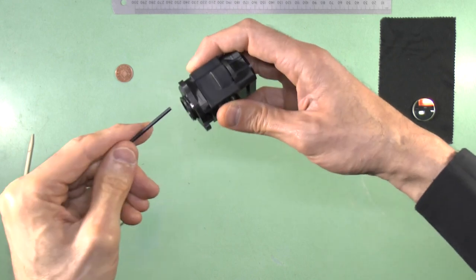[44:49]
And lastly, we'll put the bottom two. Remember, the openings of the filter slots face the back, same direction as the opening for the upper filter slot. So it's like that. As we come to the end, just be careful not to put too much pressure on the threads to damage the plastic on metal threads. You want it firm, but not tight as you would some all metal construction.
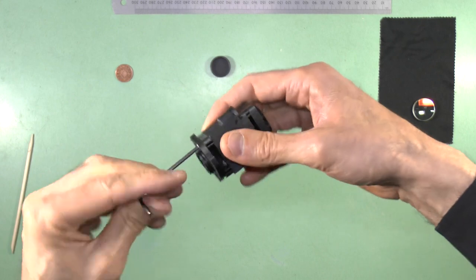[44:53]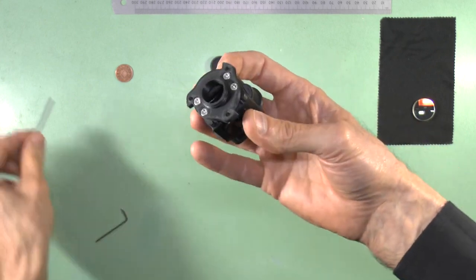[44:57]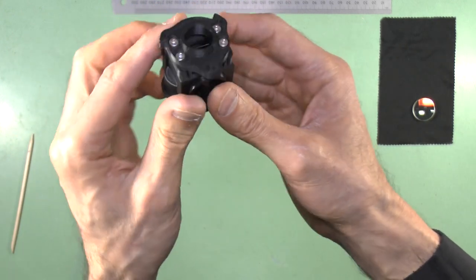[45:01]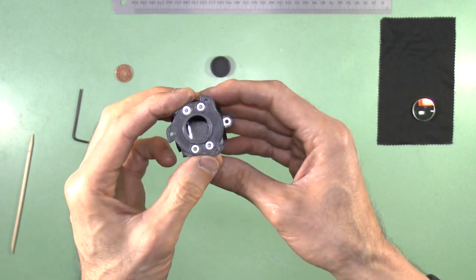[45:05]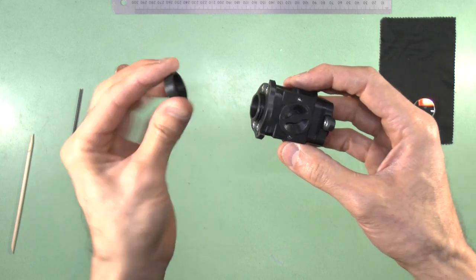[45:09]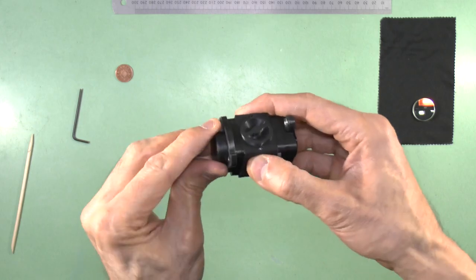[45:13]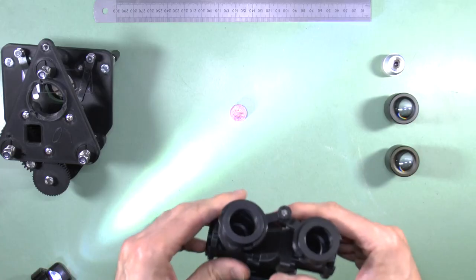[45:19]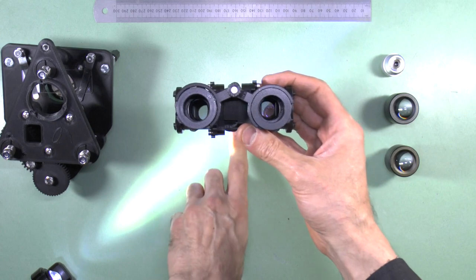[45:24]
Your advanced filter block is now ready to use, and the beam splitter for your binocular head module is also ready to be incorporated into the binocular head, which I'll show you in another video.